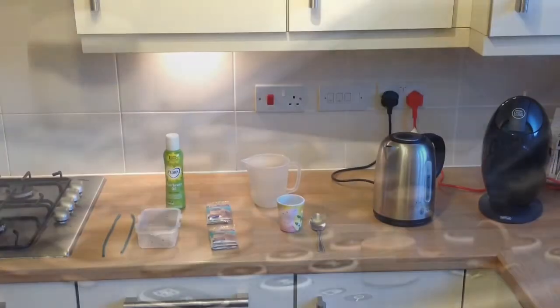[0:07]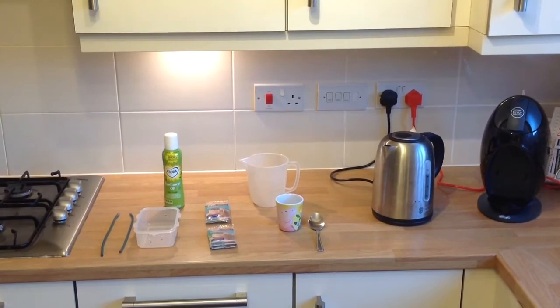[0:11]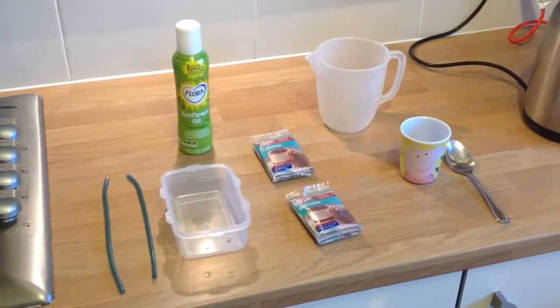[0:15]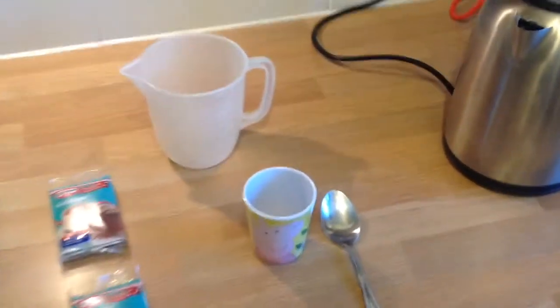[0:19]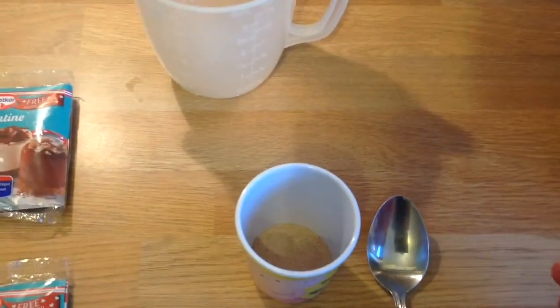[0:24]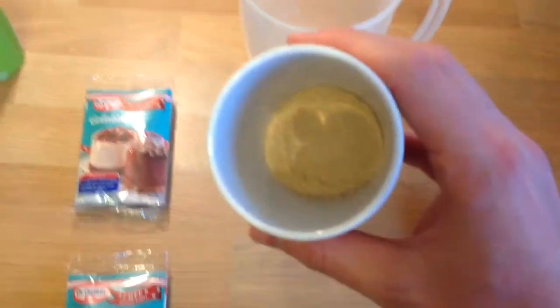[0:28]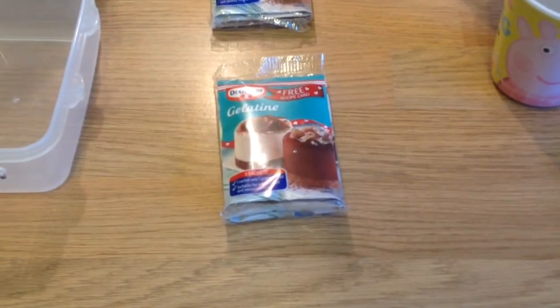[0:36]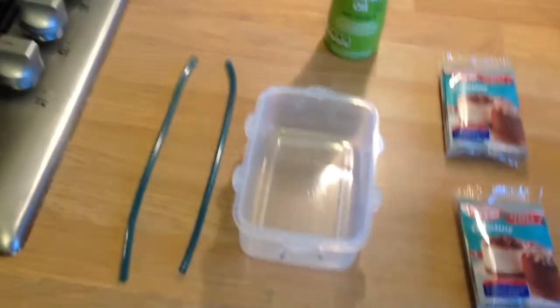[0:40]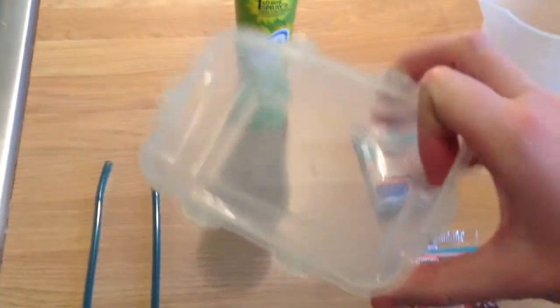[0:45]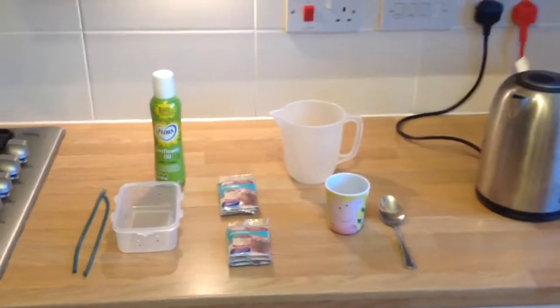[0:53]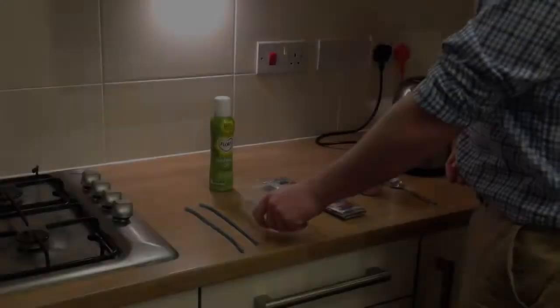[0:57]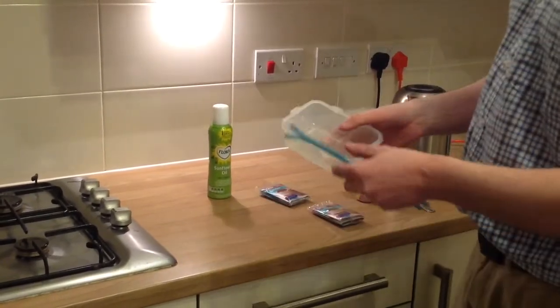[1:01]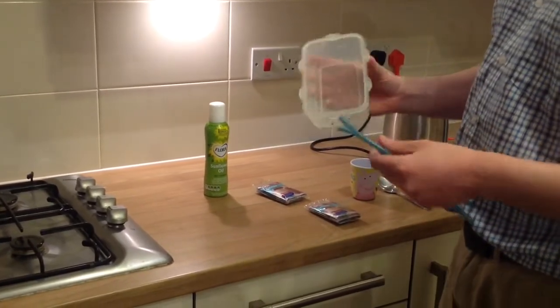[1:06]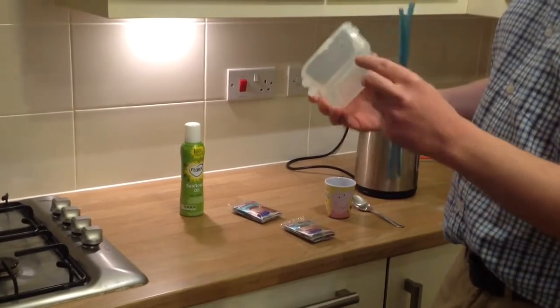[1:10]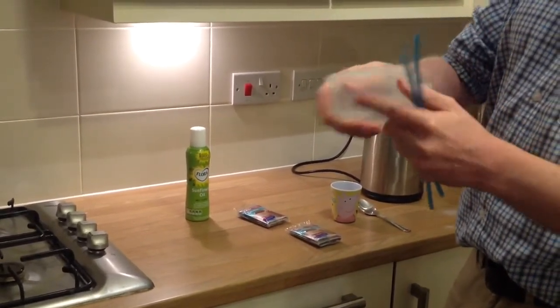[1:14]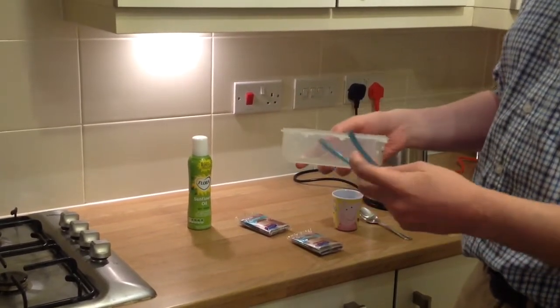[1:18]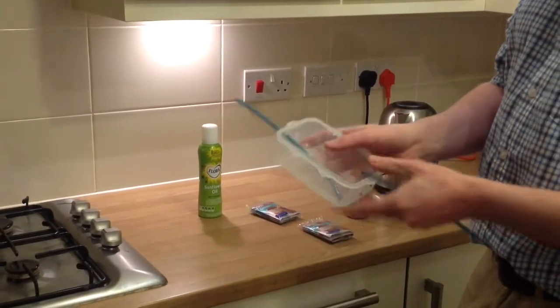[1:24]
We're going to make a phantom for practicing injection techniques. What we've got here is a Tupperware box. We've drilled holes into each end of the Tupperware box. We have two lengths of anaesthetic tubing. You could use straws or something similar. They can then be fed through the Tupperware, like so.
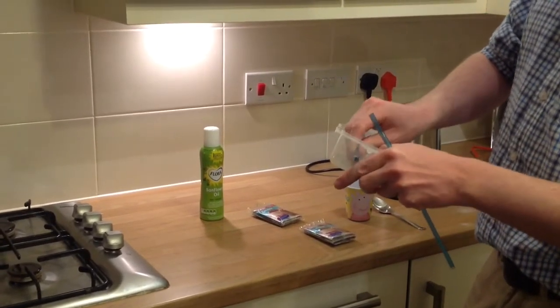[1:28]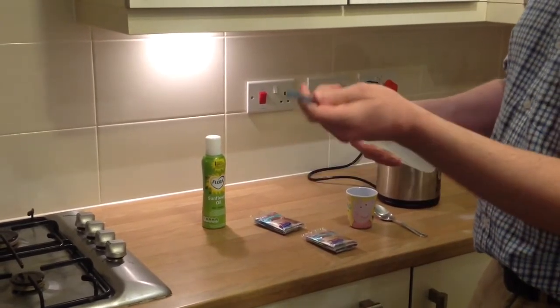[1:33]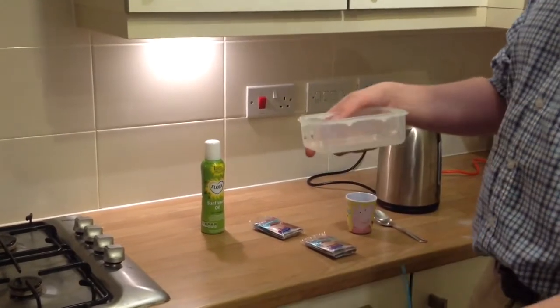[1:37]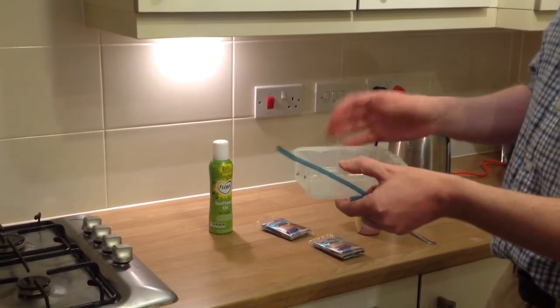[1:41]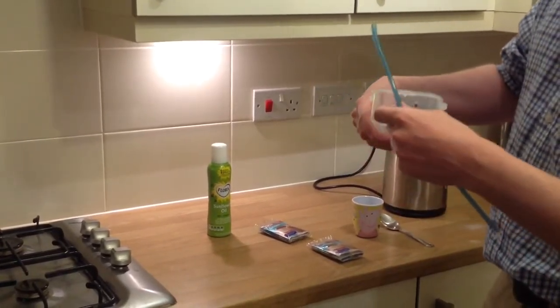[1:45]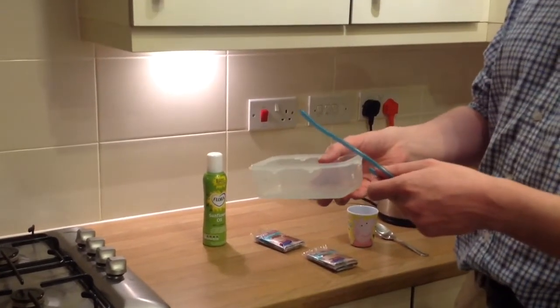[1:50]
The point of this is that when the gelatin is set inside this Tupperware, the straws can be removed, and then the phantom model that we're going to make will have essentially simulated vessels, which obviously podiatrists aren't commonly injecting, but this gives you something to practice injection techniques on.
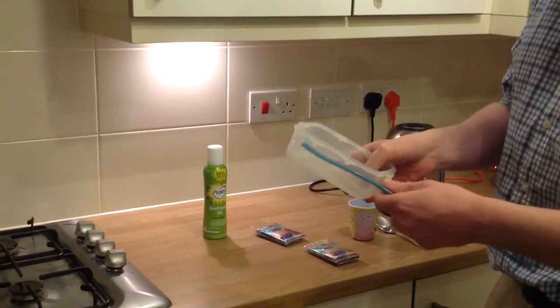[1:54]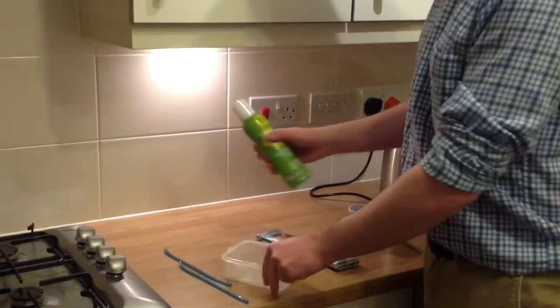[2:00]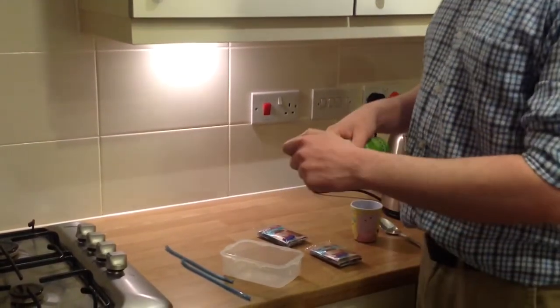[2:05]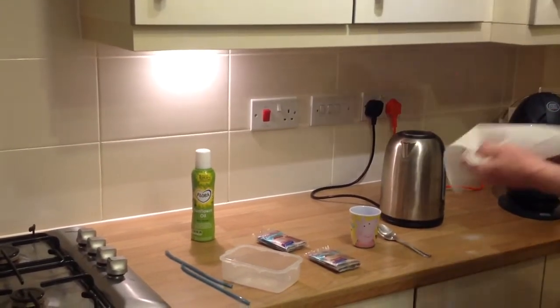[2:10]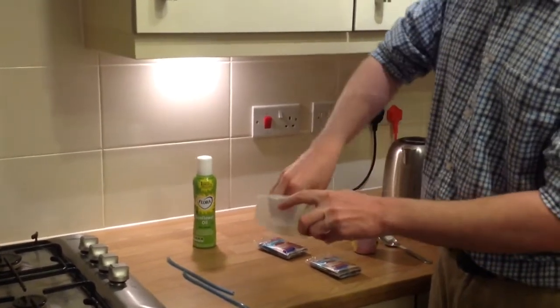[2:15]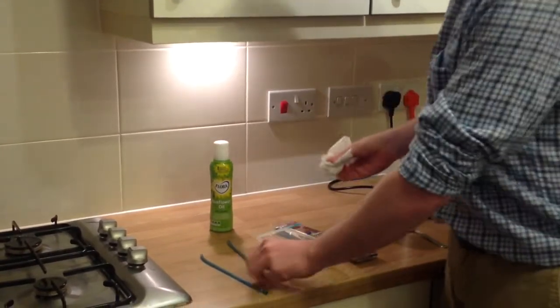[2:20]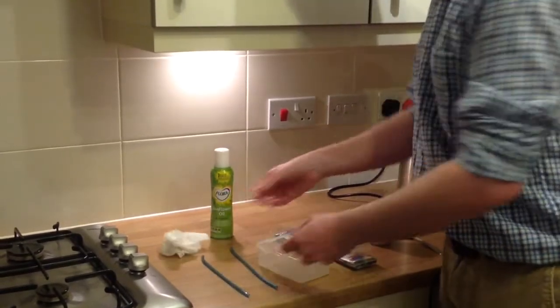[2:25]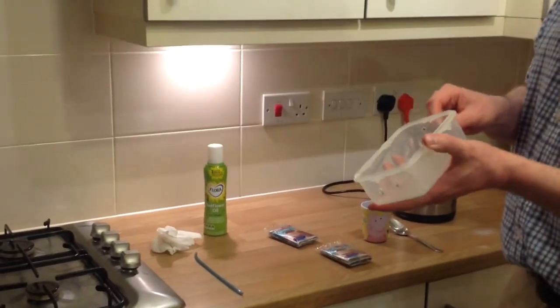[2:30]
So like that. But one of the things that can be quite useful if you're preparing a phantom like this is to get a wee bit of oil. Just a wee spray, or a little bit of oil. And then just run that round about the inside of the container, like so, and along the straws here. And that can make it easier when you're extracting the phantom later on. So we'll feed that back in just now.
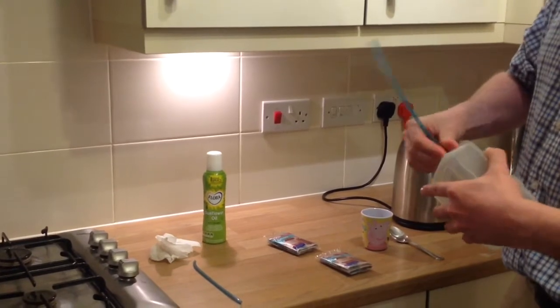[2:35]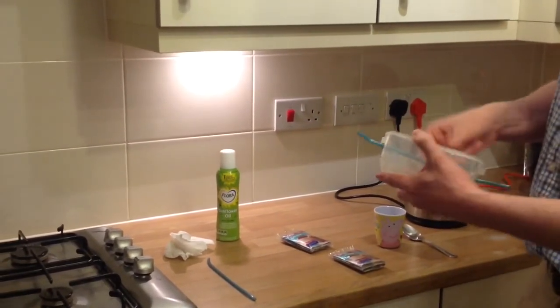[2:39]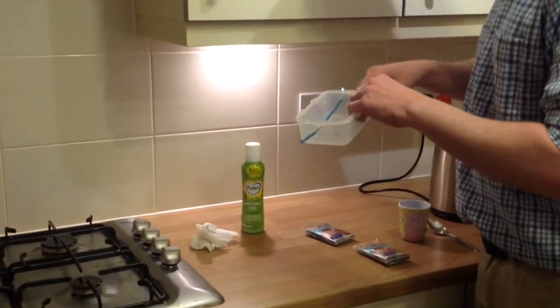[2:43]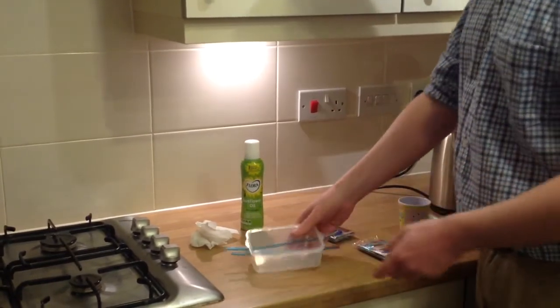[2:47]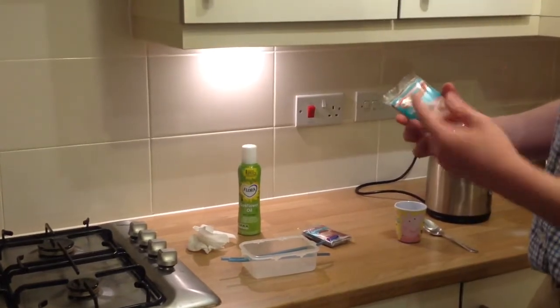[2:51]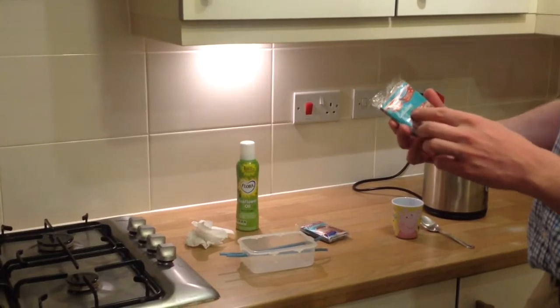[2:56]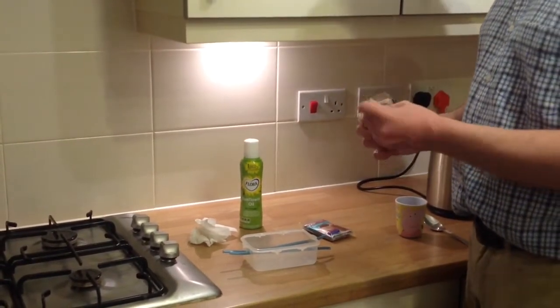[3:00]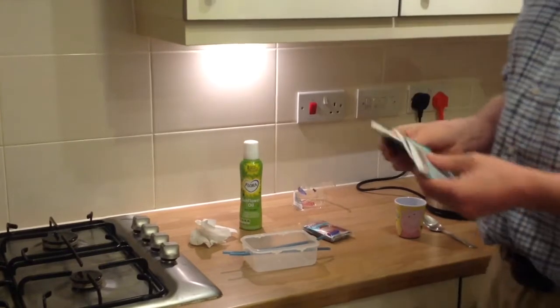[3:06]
So that's essentially the model that we'll fill with the gelatin just shortly. The gelatin we use, you can buy this in any supermarket. It's a Dr. Oetker gelatin. One packet. One of these packets contains 3 sachets. So we have 3 sachets inside that.
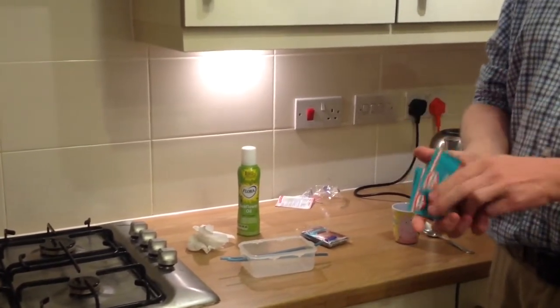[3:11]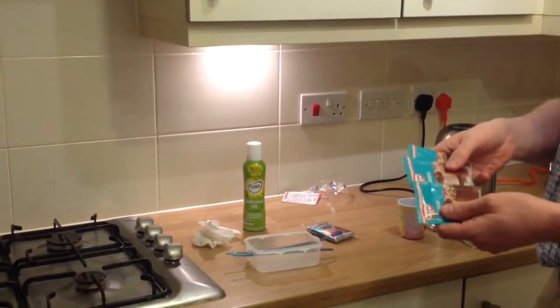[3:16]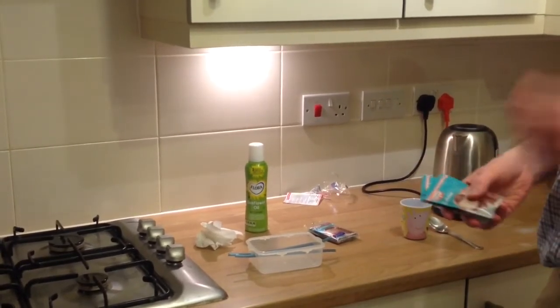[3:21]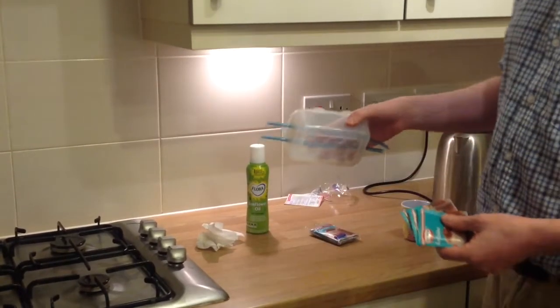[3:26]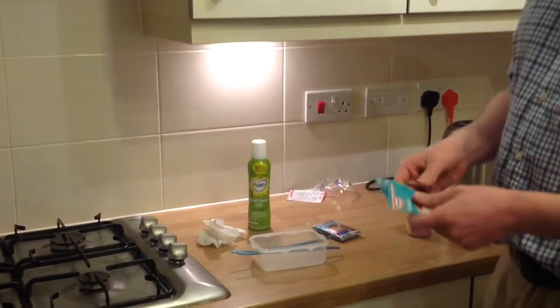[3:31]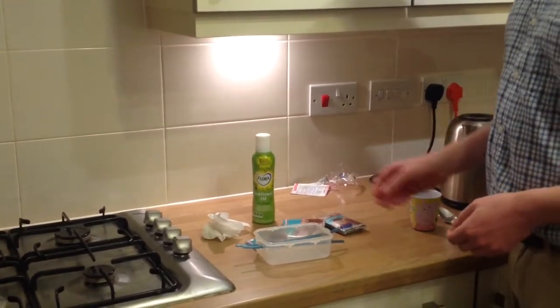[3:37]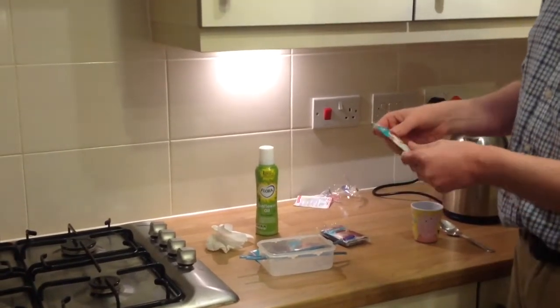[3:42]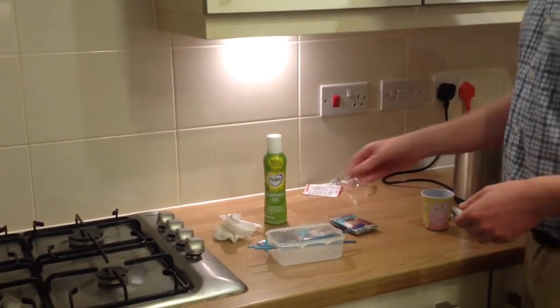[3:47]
3 sachets is the right amount of the gelatin to make 250 mils of the fluid that we use to create the phantom. Now this phantom here would probably hold 500 mils, more or less. So we actually end up needing 6 sachets in order to fill this. And I suppose if you've made gelatin before, you'll be aware of it. It's a kind of tricky substance to work with. You need to dissolve it quite slowly.
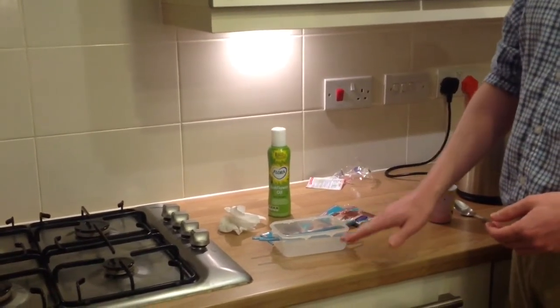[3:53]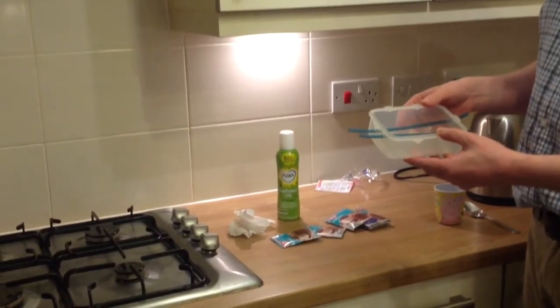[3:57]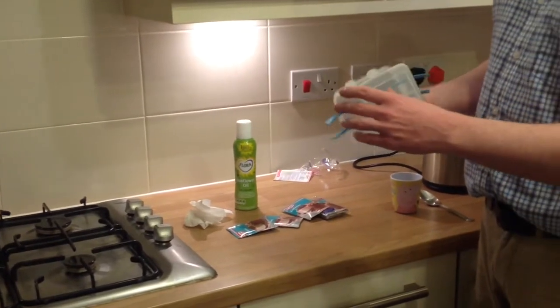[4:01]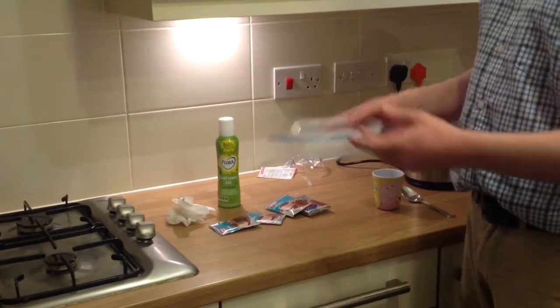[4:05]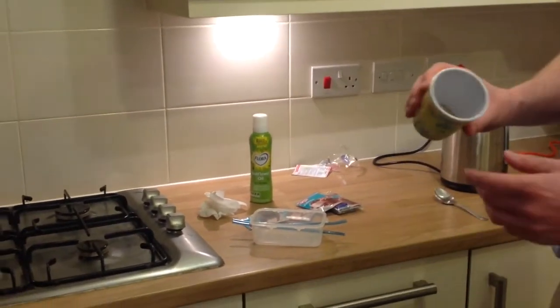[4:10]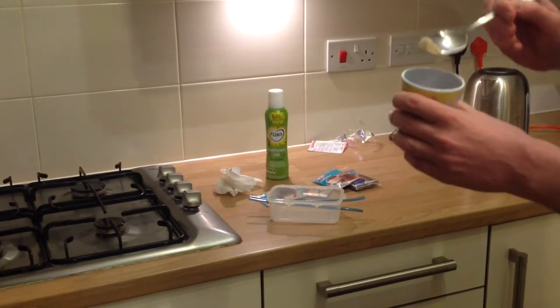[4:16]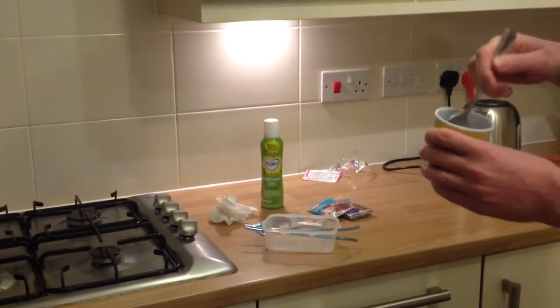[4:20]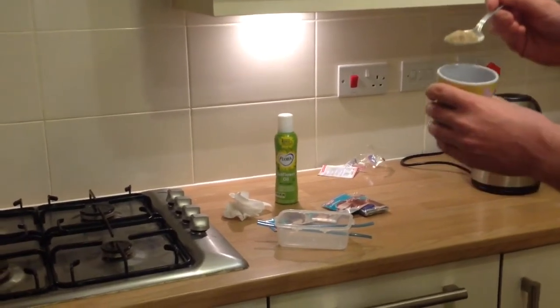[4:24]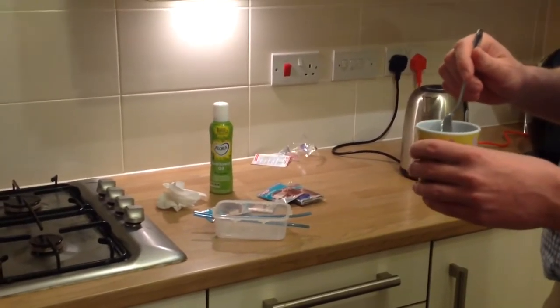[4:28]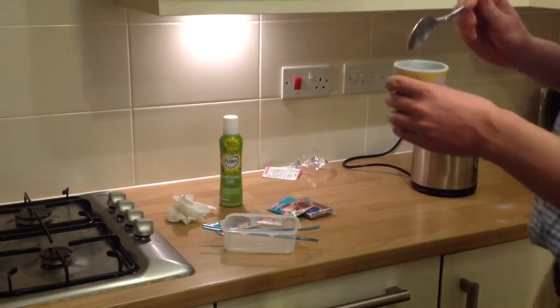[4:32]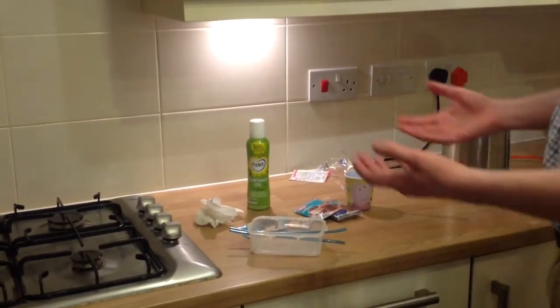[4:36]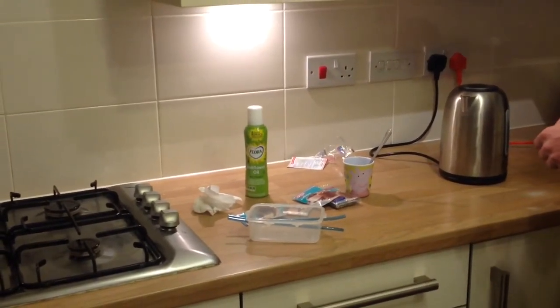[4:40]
A purely gelatin model will give you an almost clear phantom with very little scatter in the material. So if you're scanning it, it will look almost anechoic. So to get around that problem, what we use is stuff called metamucil or psyllium, and it's a powder. You can easily buy this in the chemist. It's reasonably cheap. The whole phantom model will probably cost less than £5 to make, and that gives the gelatin some substance, some scatter, which you'll see later on.
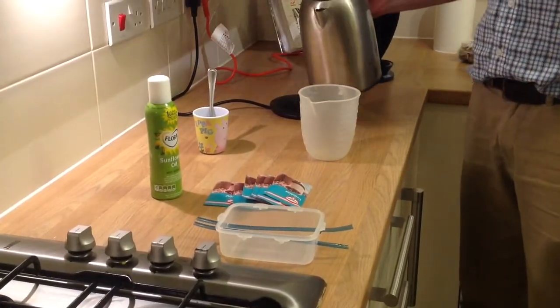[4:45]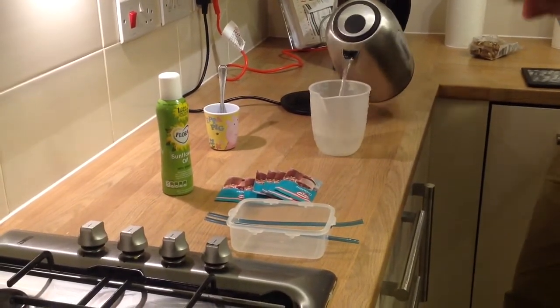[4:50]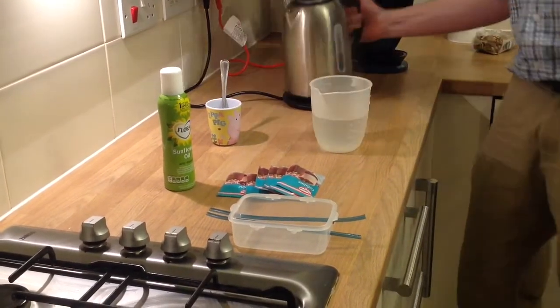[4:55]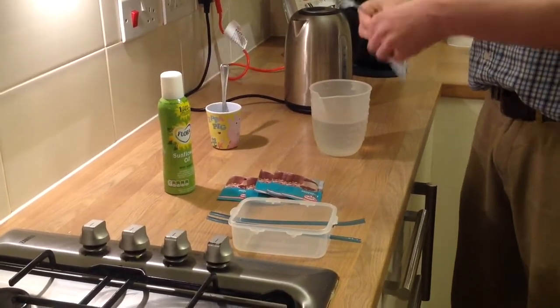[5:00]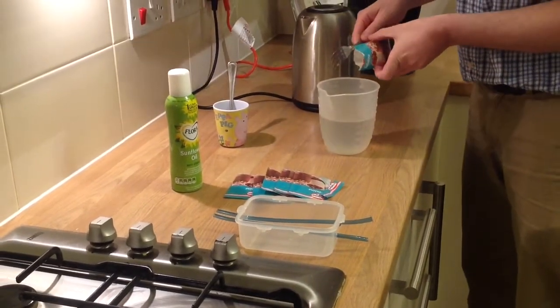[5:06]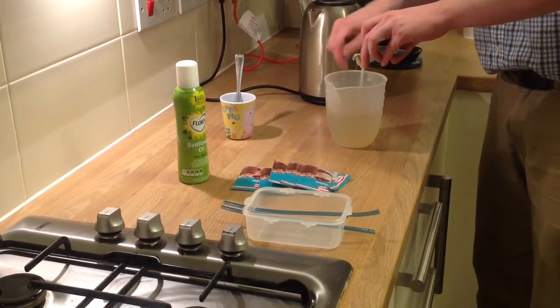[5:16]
So pause it. Okay, we need to get some boiling water, freshly boiled water, and we'll fill this up to 500 mils, which is right there. Okay, so we need 6 of these sachets. We have to dissolve each one in separately, so you don't want it to clump, otherwise you have clumpy gelatin at the end.
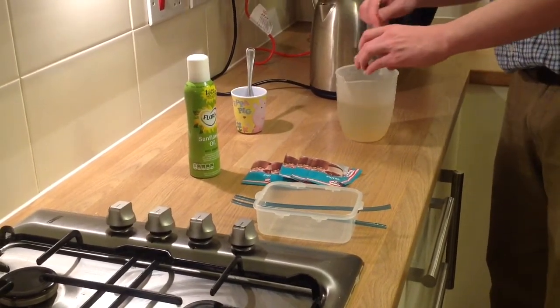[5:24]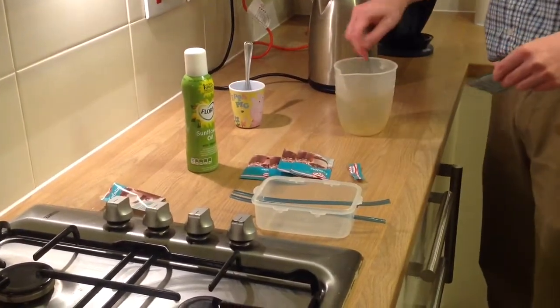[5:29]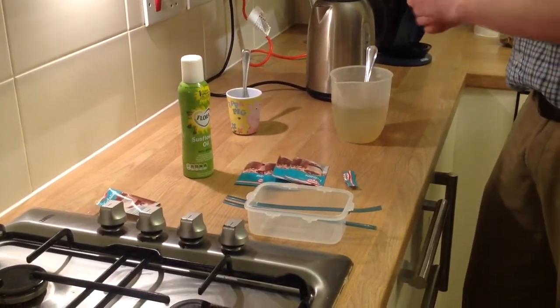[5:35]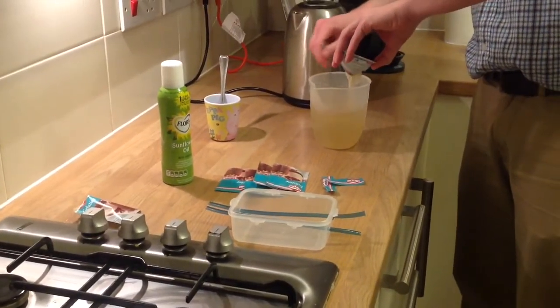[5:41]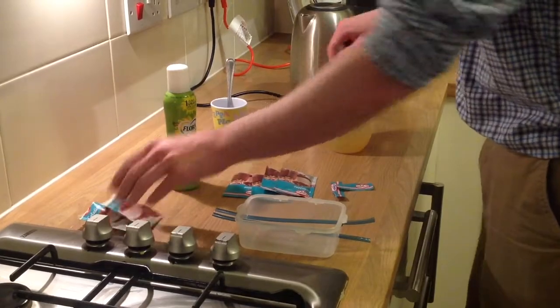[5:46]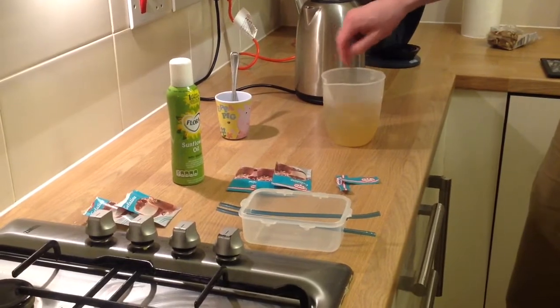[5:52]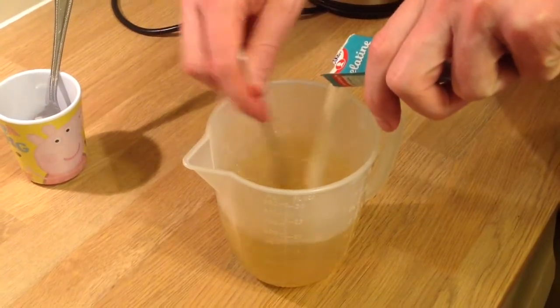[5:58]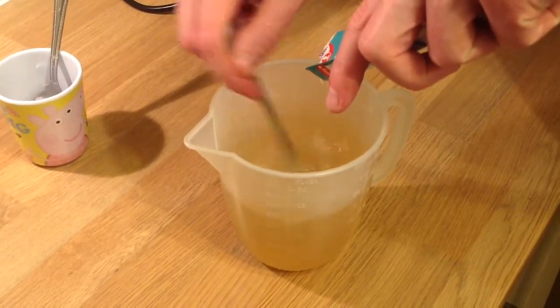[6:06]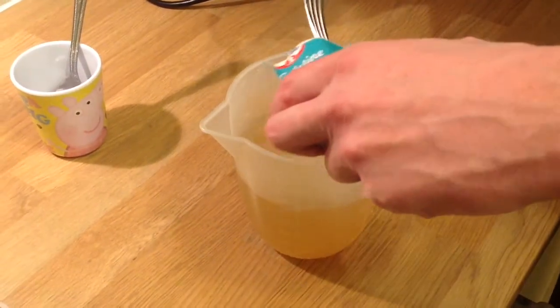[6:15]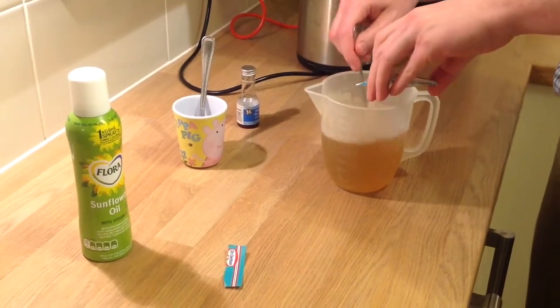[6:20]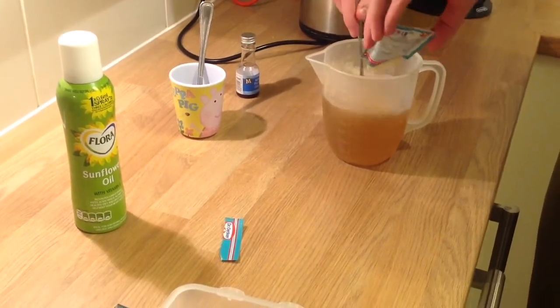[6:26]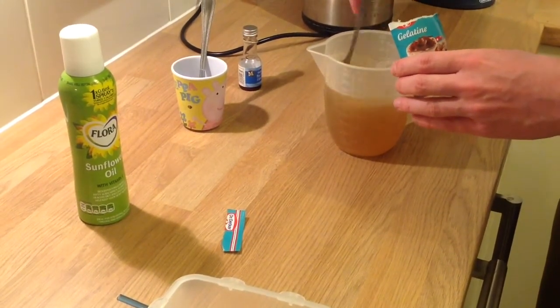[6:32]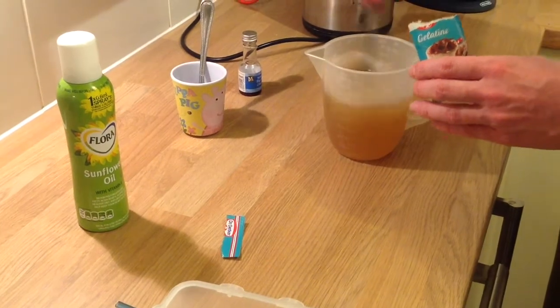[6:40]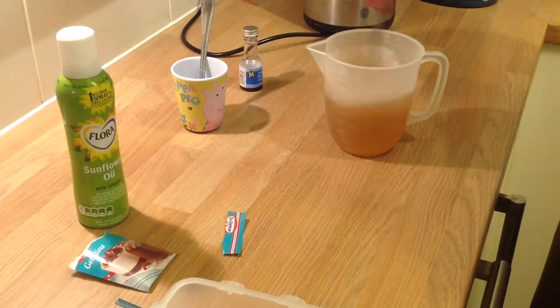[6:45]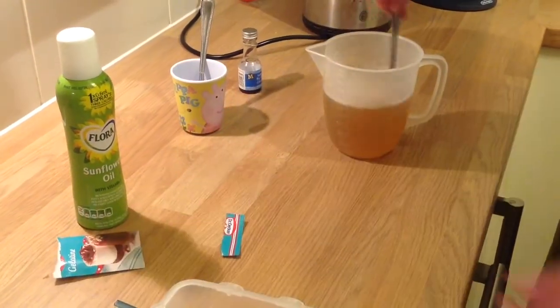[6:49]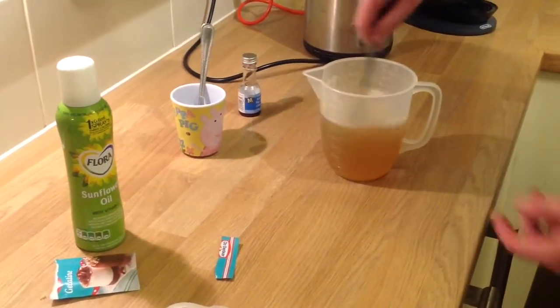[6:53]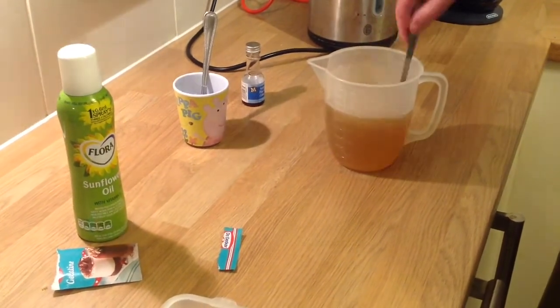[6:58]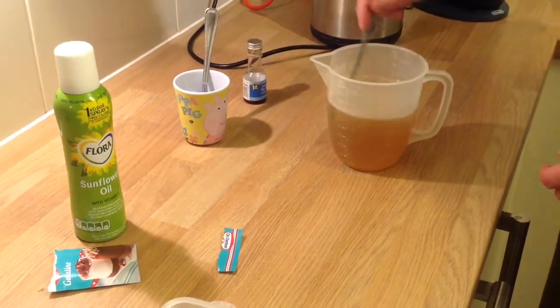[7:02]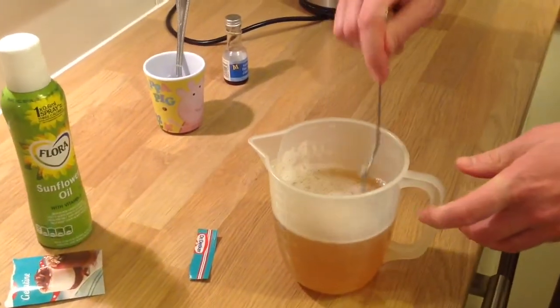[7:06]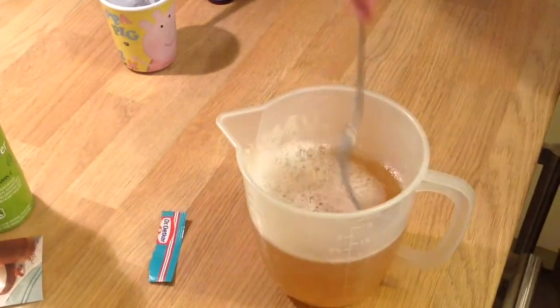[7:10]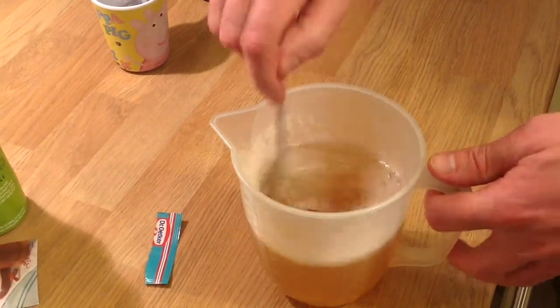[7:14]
Okay, that's us used all 6. That's the 6th sachet going in now. So that's the colour of the gelatin fluid. But if you look at it now, you'll see it's essentially quite clear inside. So we don't want that. We want some consistency to it.
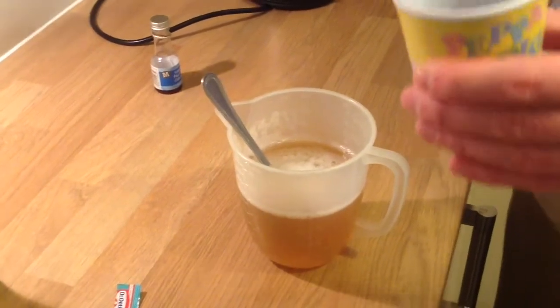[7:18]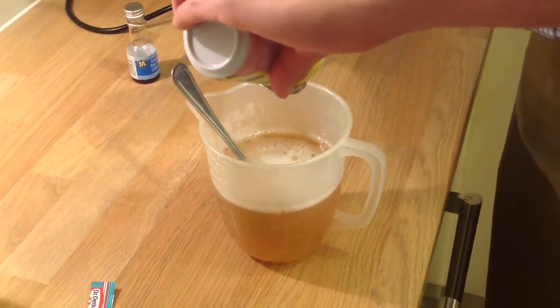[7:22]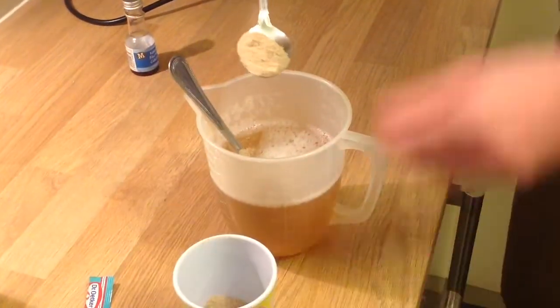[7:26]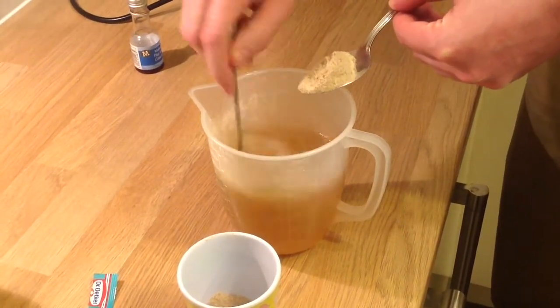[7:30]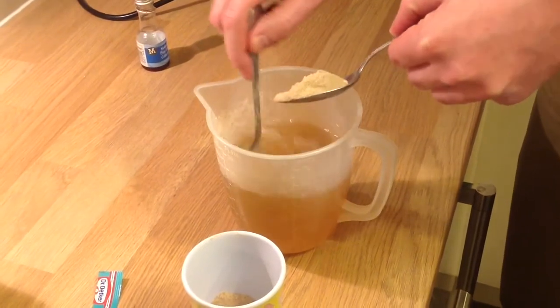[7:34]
So this is when we use this, one spoonful of the powder here, and we want to stir that in as we apply it, so that we don't get clumps. So again, this kind of gradual process.
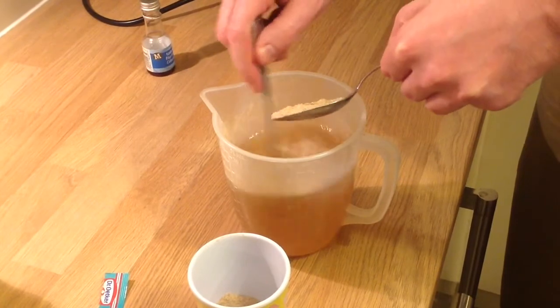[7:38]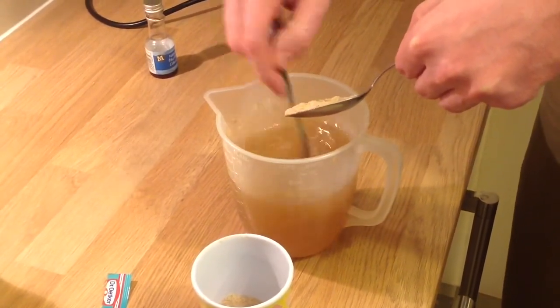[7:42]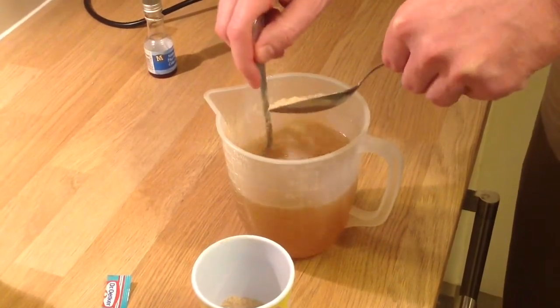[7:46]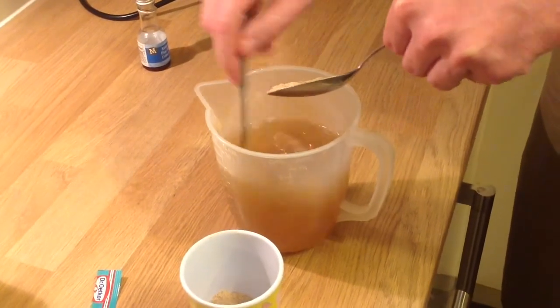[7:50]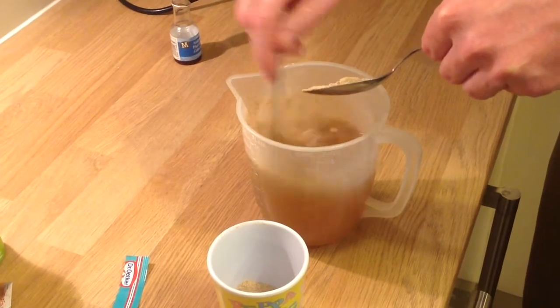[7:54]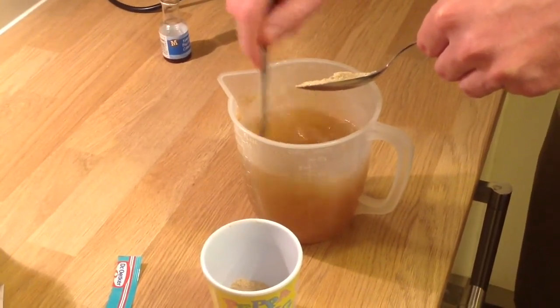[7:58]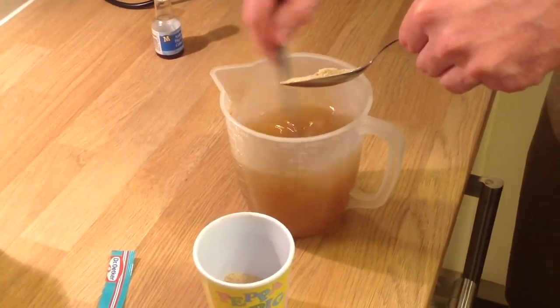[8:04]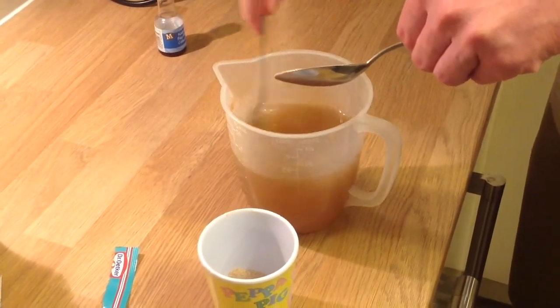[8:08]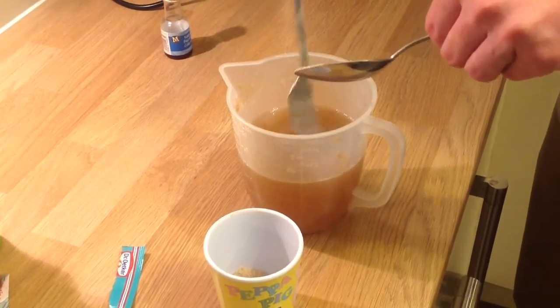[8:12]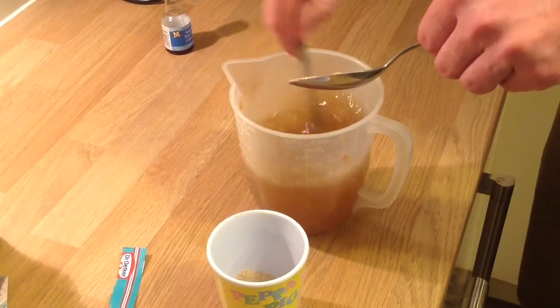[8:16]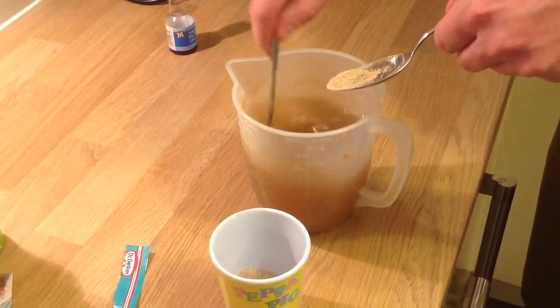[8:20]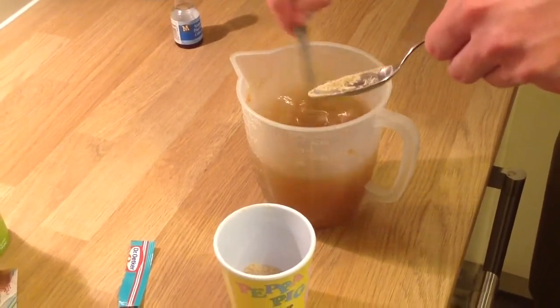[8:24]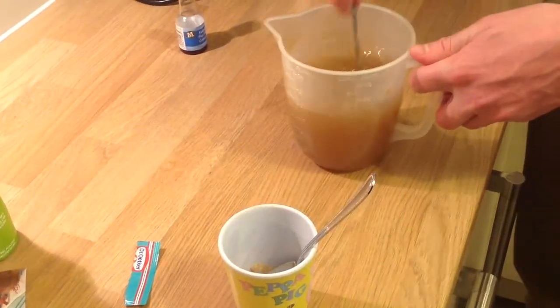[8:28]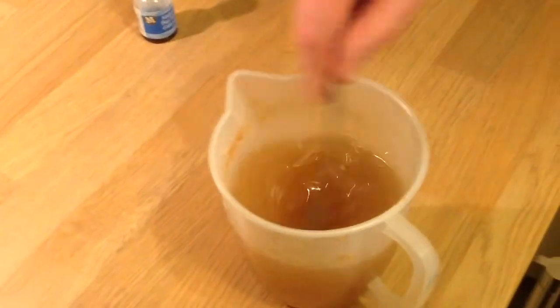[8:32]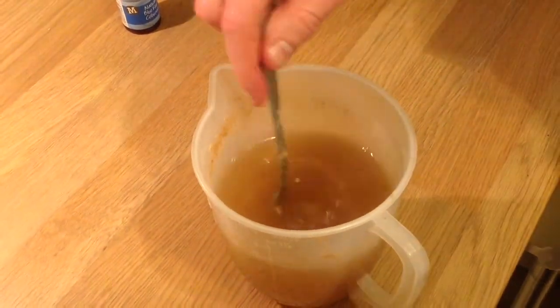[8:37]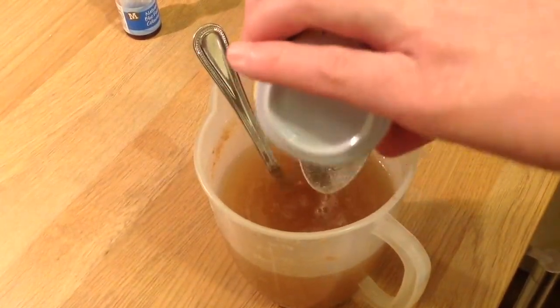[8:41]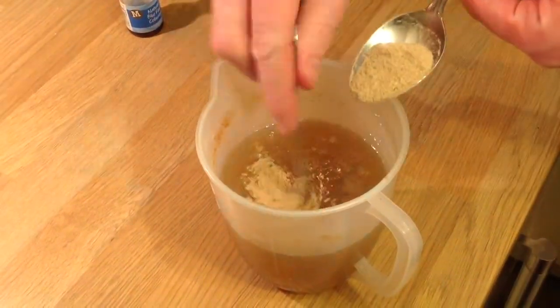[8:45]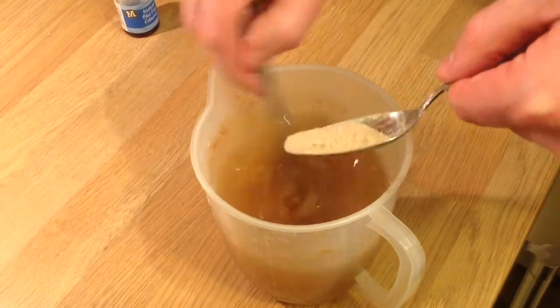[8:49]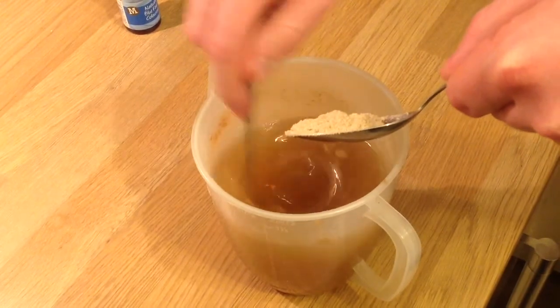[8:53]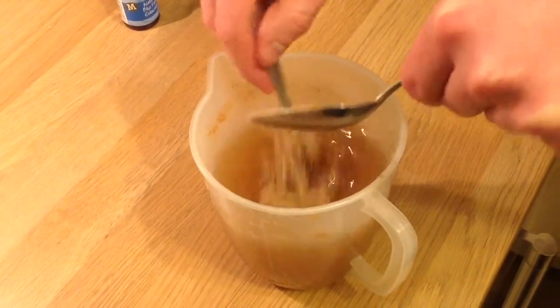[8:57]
We can have a look inside again just now. You see it's become much darker. We can maybe add a little bit more. There's a little bit more here. So we add that in. Just keep stirring it. Keep stirring. Yeah, a nice thick scatter in our ultrasound phantom.
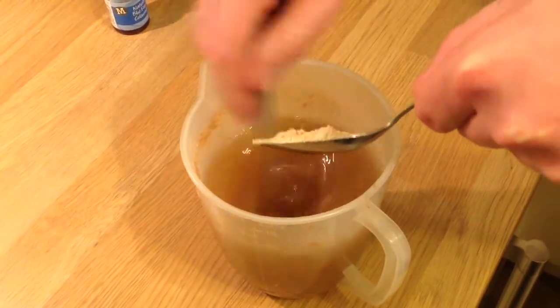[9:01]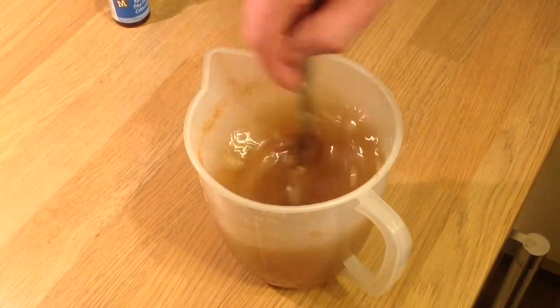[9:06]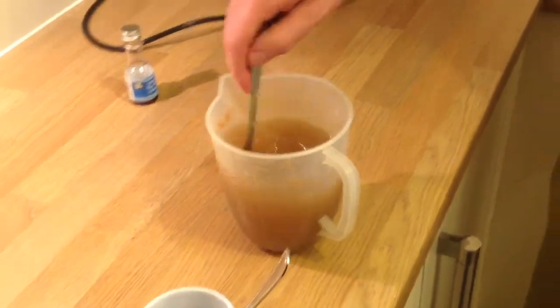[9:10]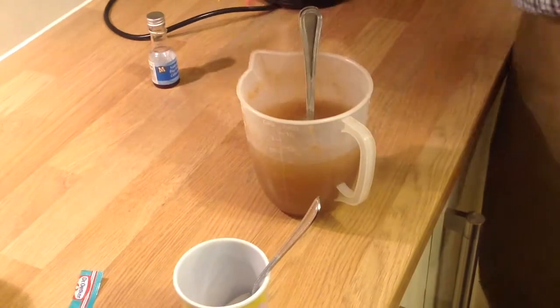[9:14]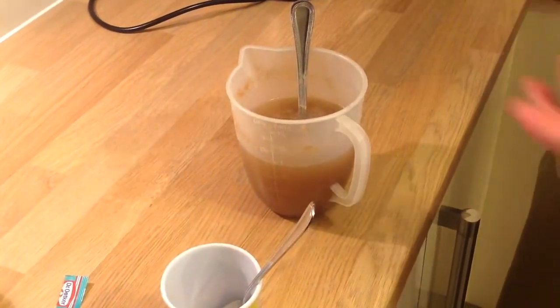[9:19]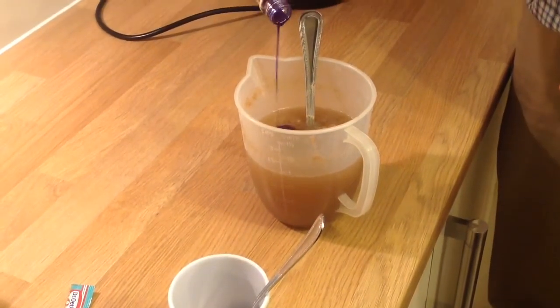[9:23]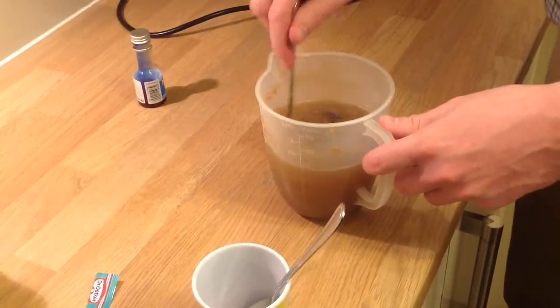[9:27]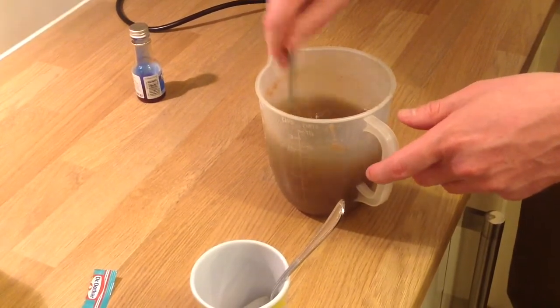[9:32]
And one other thing that we can do is we can add some food dye, simple food colouring. Simply a few drops of this should be enough to give it a very dark colour, which could be useful for hiding the vessels and make practice scanning easier. So we're still stirring this.